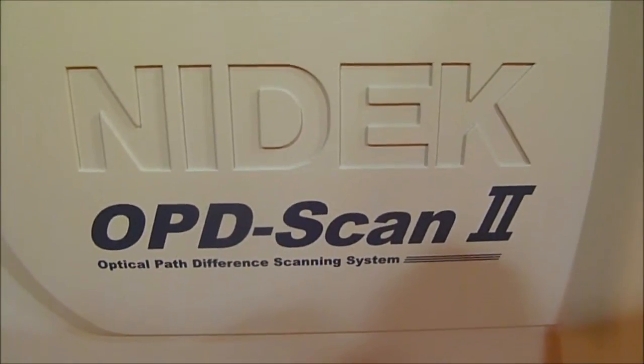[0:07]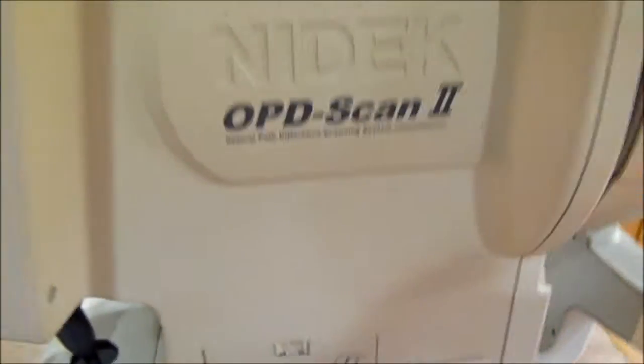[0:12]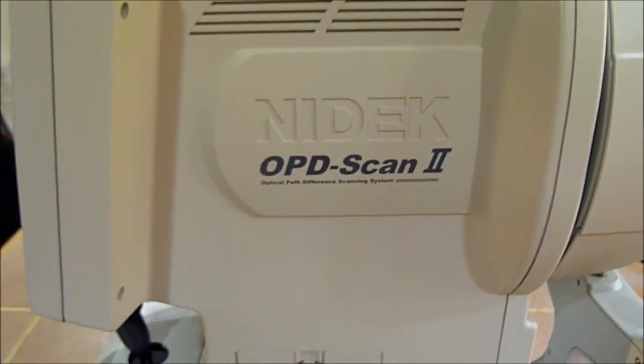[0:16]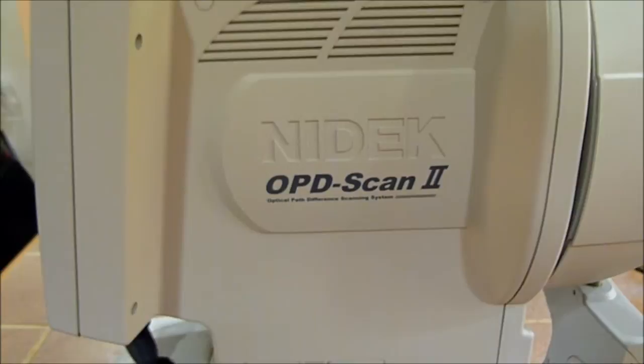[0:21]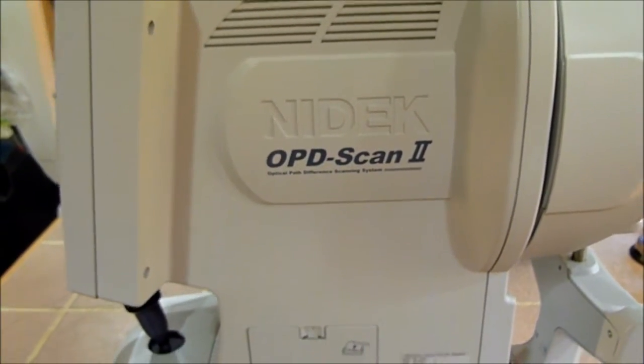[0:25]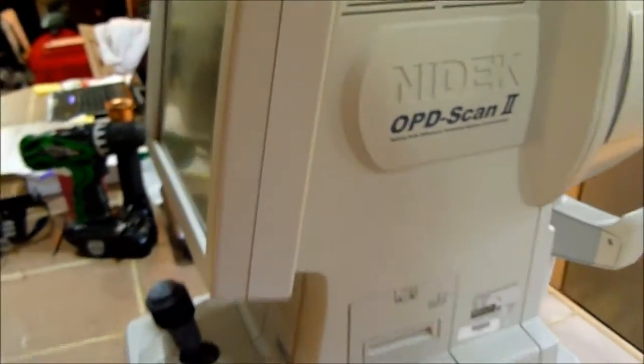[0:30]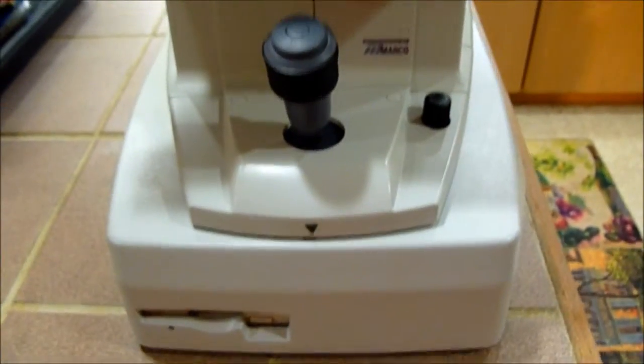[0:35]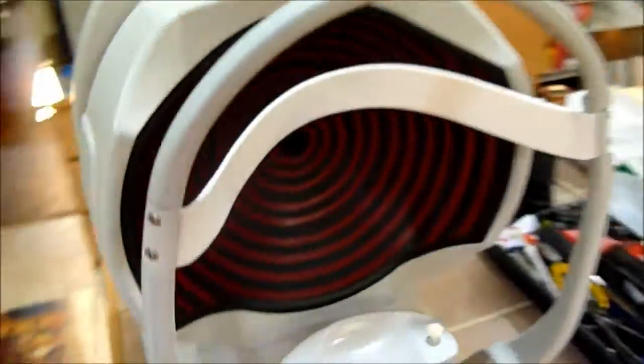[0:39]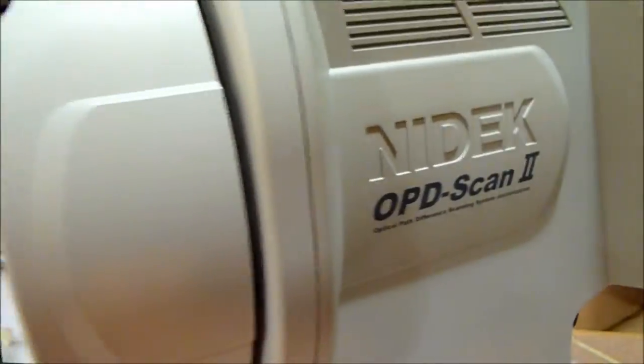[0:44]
10,000. It's making some really funny noises when it does the auto refraction, and sometimes the auto fire mechanism and auto tracking is not functioning. It's hit and miss, and I'm getting two different error codes, and then calibration wise it is not calibrating properly. It seems to be a bit over. So we're going to take this apart and see what's going on inside.
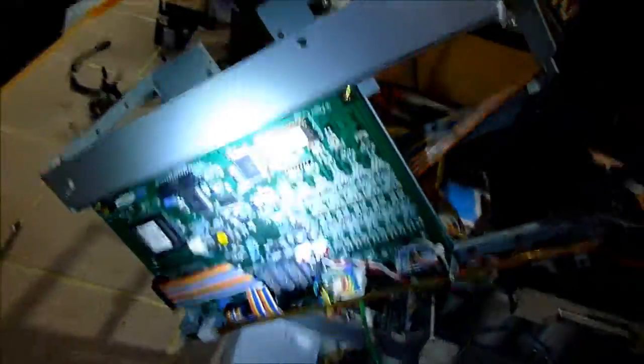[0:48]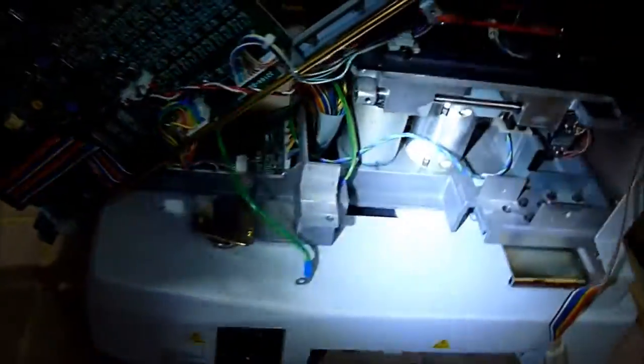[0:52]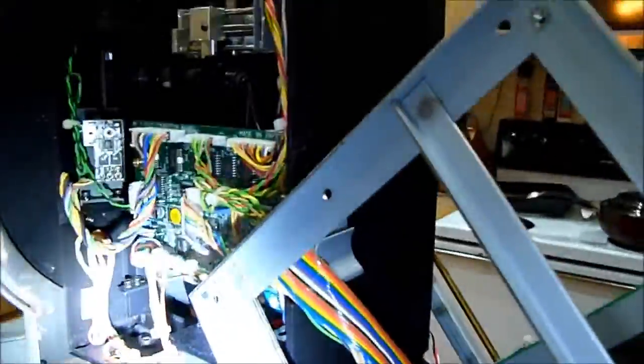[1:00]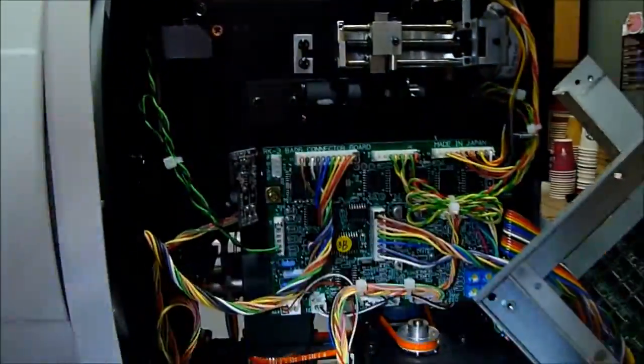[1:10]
What we did is we took off all the paneling. We took off this big cage here. We took off the sides and that bottom. And then on this side we did the same thing. Took off this cage. If you see it better from over here. There we go. Took off that panel there.
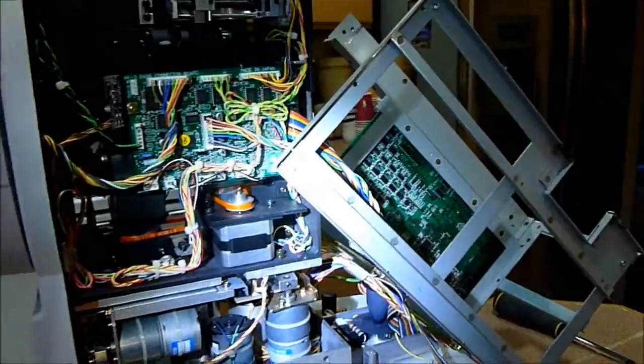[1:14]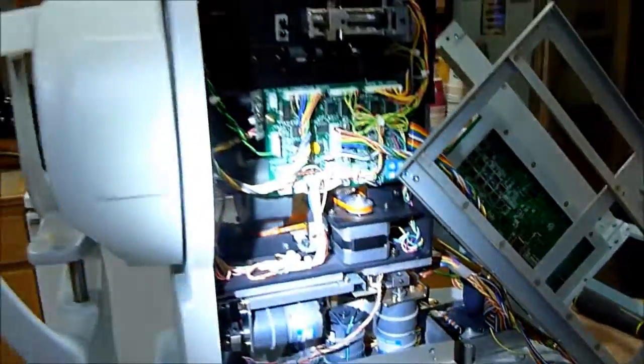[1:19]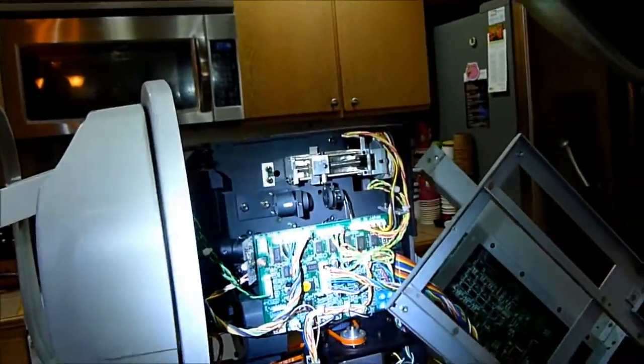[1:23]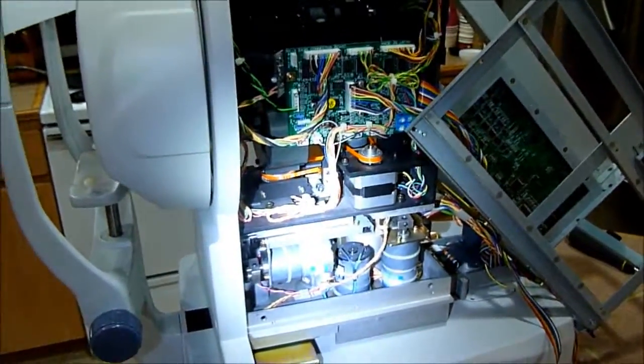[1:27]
It's a lot of work to get the frame off, but once you do, you can access everything. You just have to remember how to put it back together. This is one of the more complicated pieces, so unless you feel comfortable tackling it, I recommend you don't. So you can see this lens in here is really dusty, and all the mirrors are very dusty, and then I'll film again after they're clean just to show you what they're supposed to look like.
See that one there's got a big piece of dust on it. Everywhere. You see where I wiped it there, you can see where it's clean. I just kind of wiped it real quick with my finger. It's not a mirror or anything, it's just the back of a plate. But you can get an idea how much dust is actually in here.
Oh God, you are my God. And earnestly I seek you. Oh, how I long for you. In this dry and weary land.
There's clean. Everything clean back here. The mirror right there, behind the wires there. And we got that little sensor lens right back there.
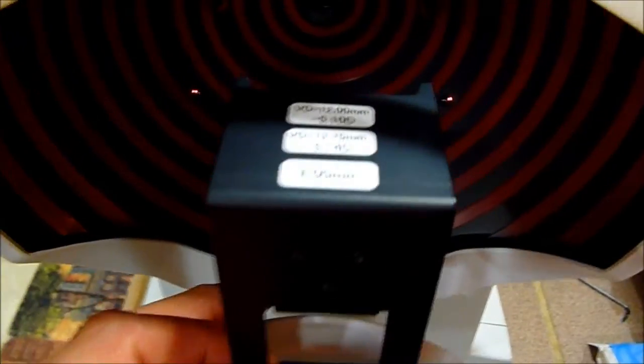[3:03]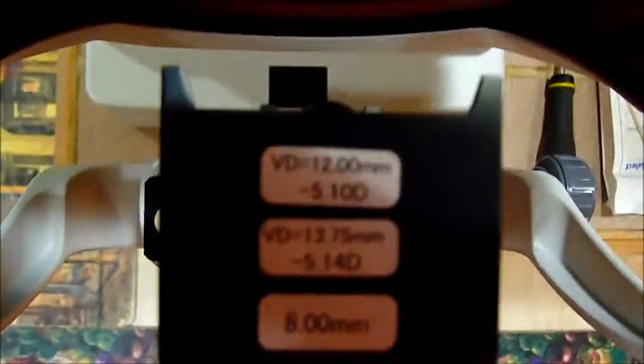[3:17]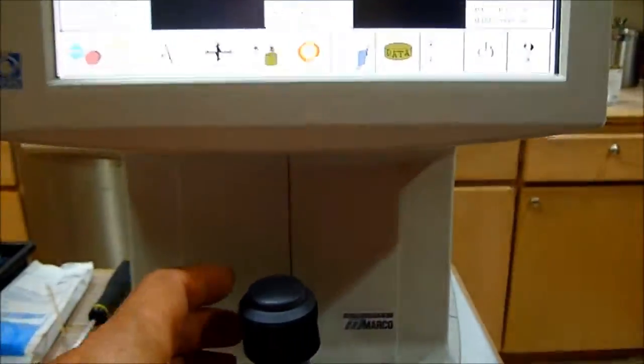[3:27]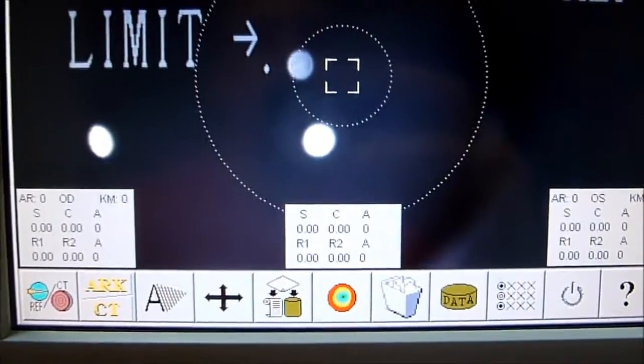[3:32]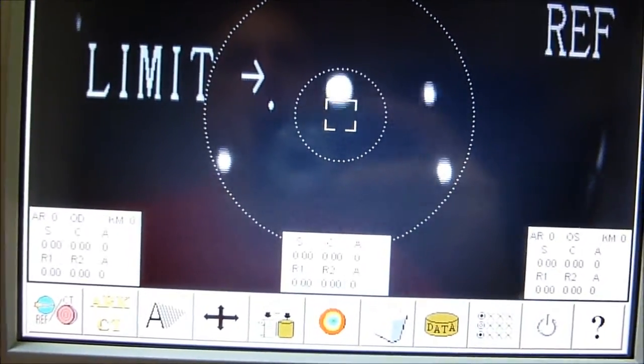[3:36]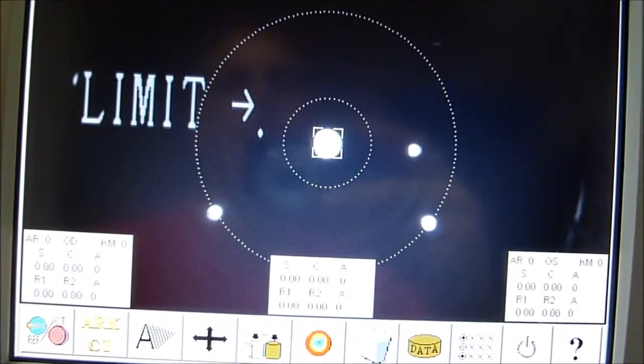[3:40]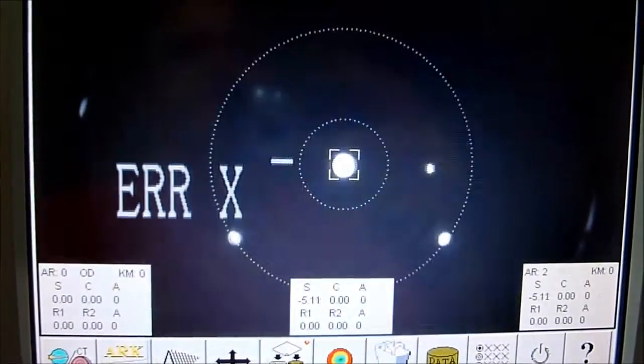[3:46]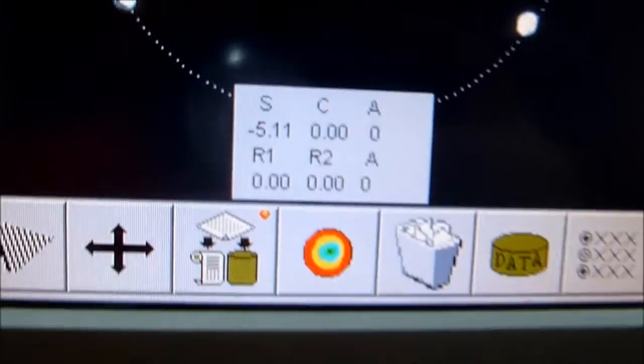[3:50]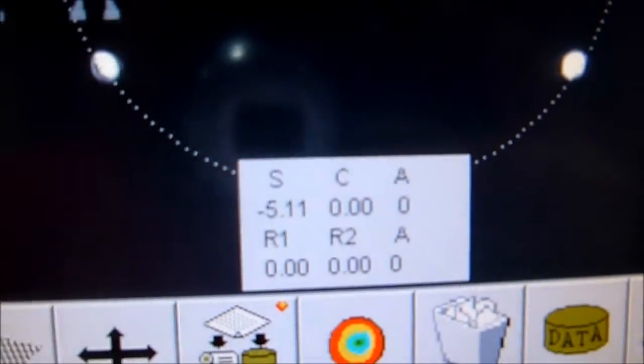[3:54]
We cleaned. Okay, we have the calibrating tool in place, and we're dealing with a vertex distance of 13.75, which gives us a negative 5.14 diopters of power that we should be calibrating to. I don't know if you can see that. So we'll go over here to the screen. And I'll go ahead and focus in on that calibrating tool. And our measurements, we're getting 511, or there I was getting 514, 515.
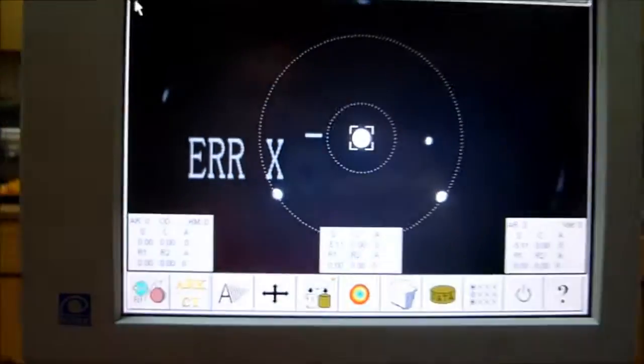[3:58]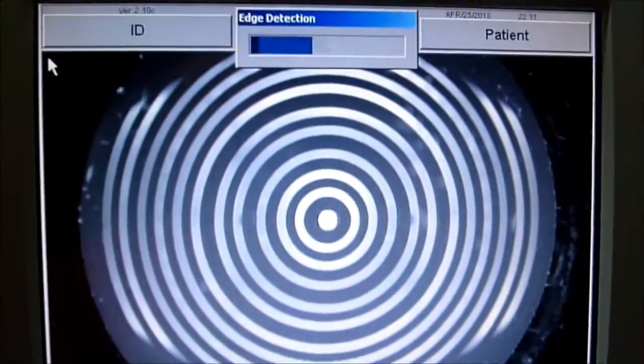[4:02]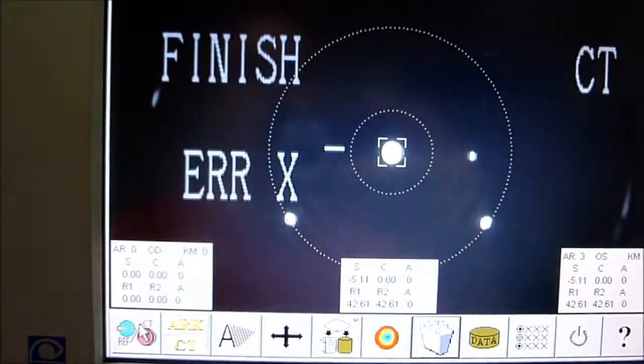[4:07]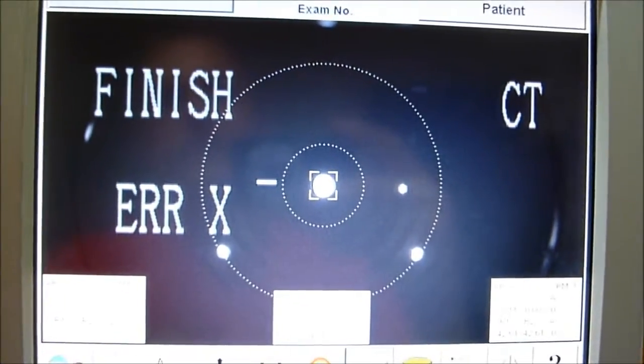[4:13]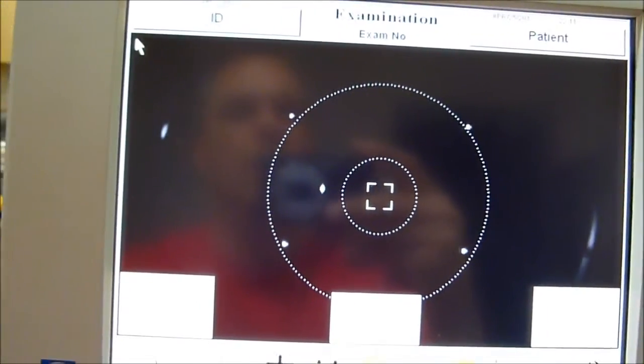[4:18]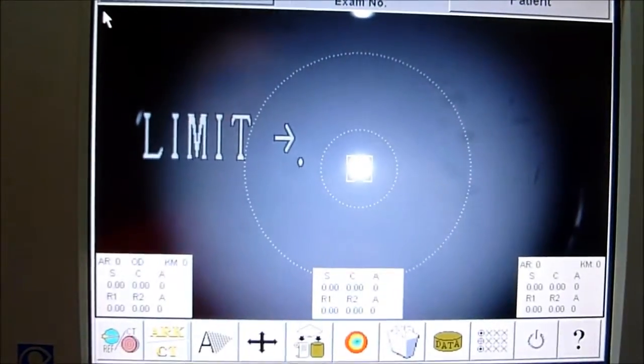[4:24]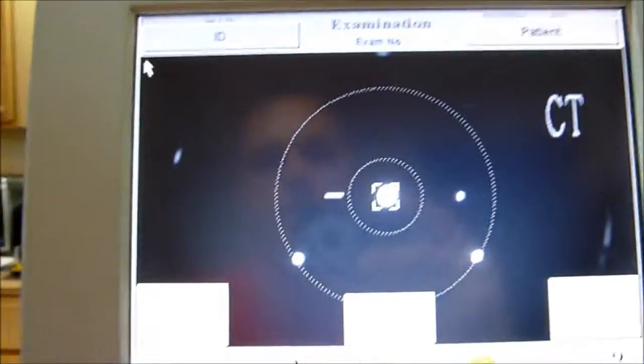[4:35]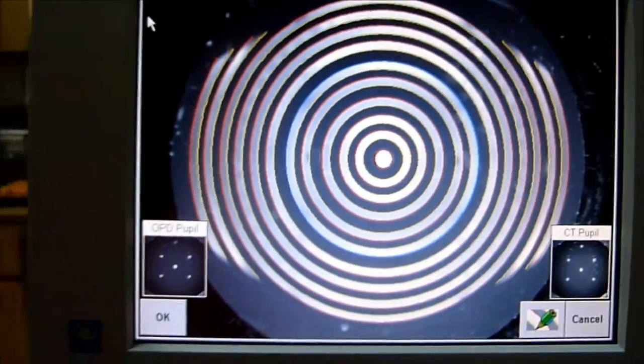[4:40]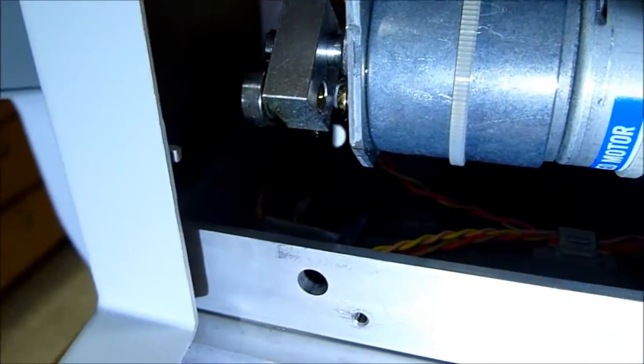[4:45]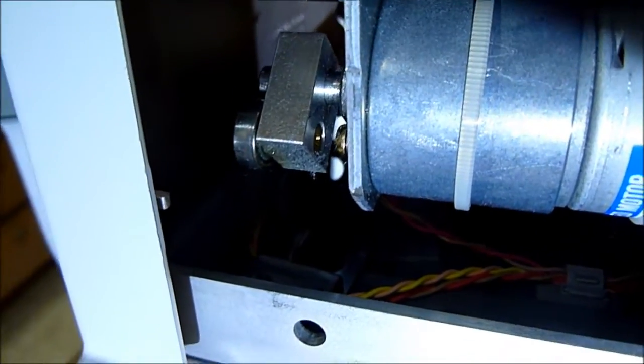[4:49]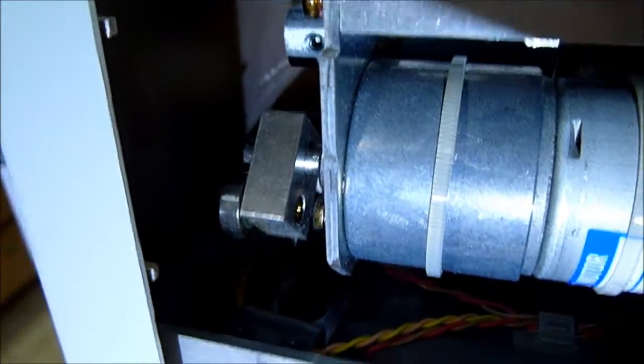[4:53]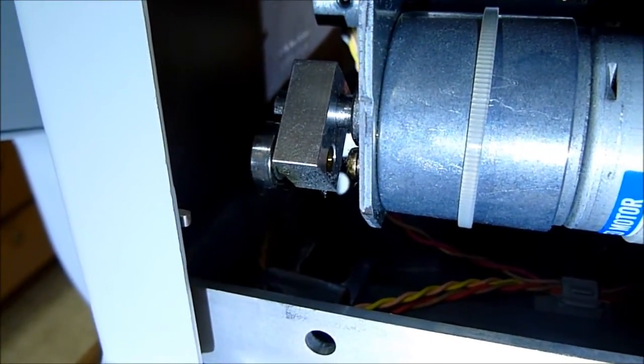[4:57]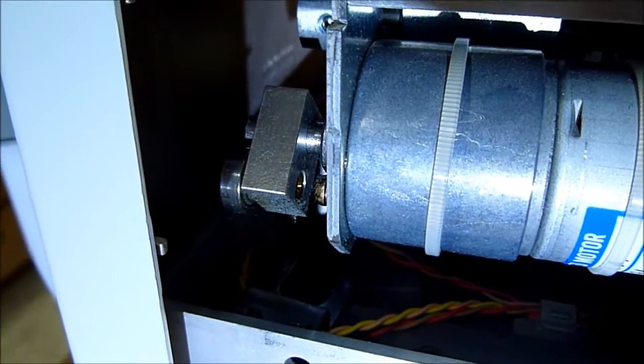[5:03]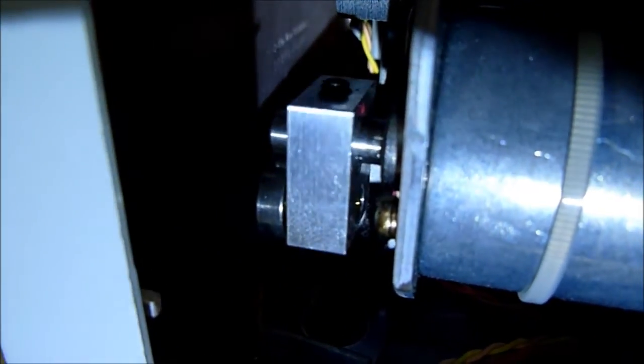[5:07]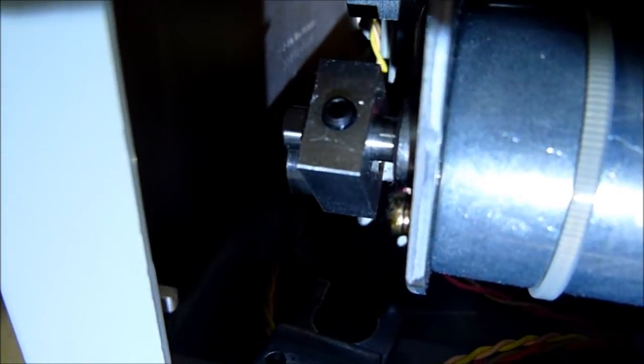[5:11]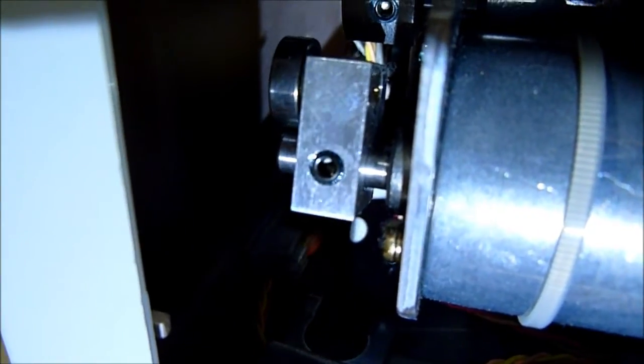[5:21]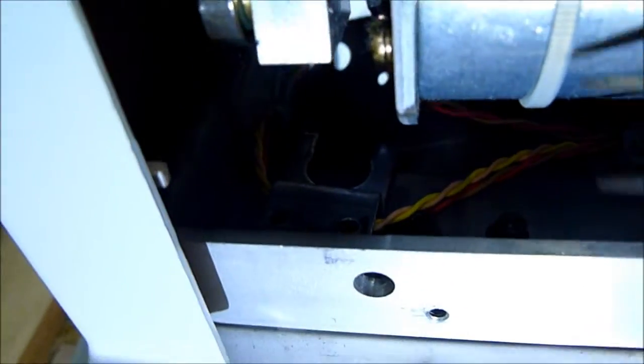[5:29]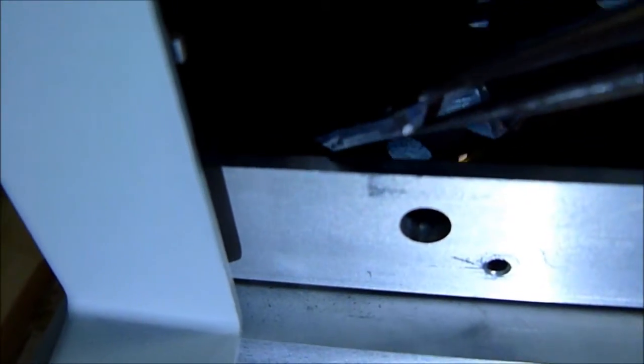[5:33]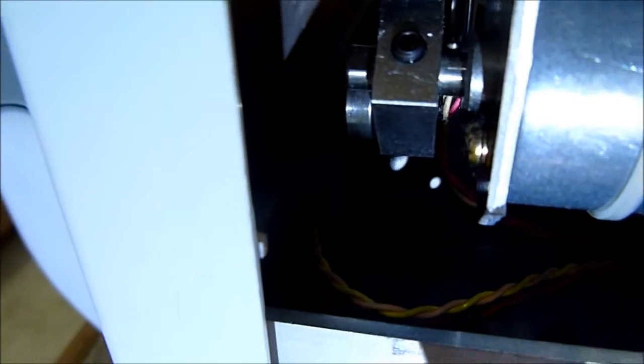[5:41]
So I figured out why we were getting some hardware errors, and what I noticed was the auto tracking was not functioning properly. And so I'm looking to see what auto tracking features aren't working. If you see this turning right here, this auto tracking motor is trying to find home, and it's not moving the head around because the bracket's missing. And if you look real close here, the bracket is right down here. And this bracket fits over that bearing so it can move the head back and forth.
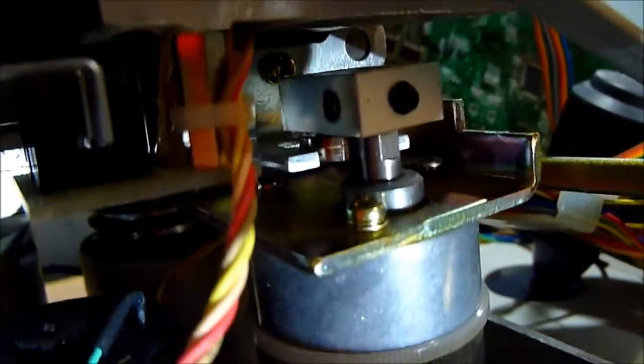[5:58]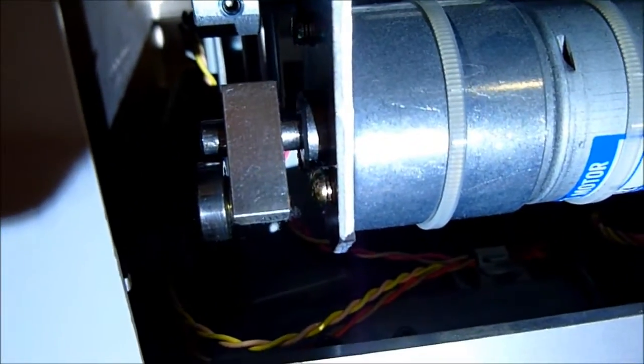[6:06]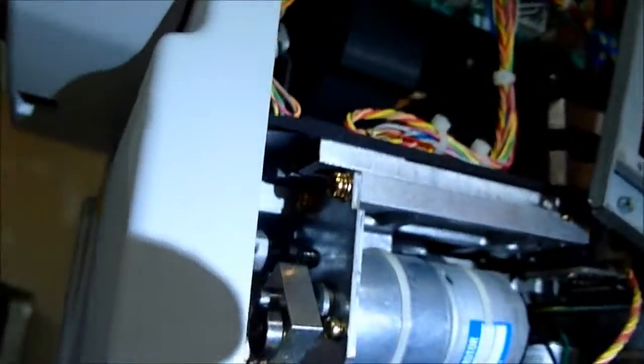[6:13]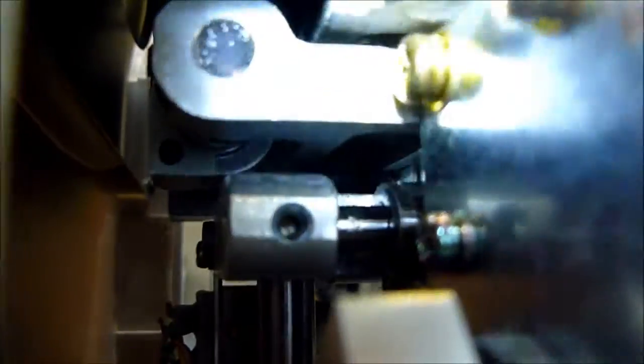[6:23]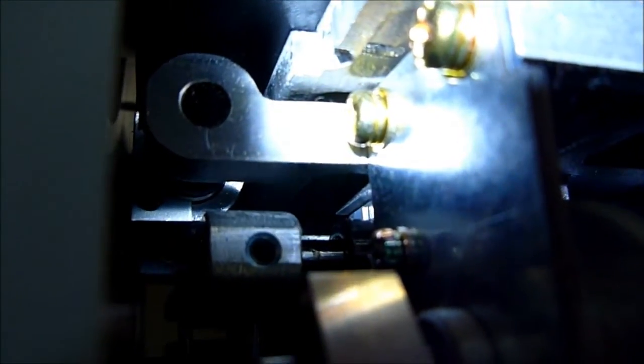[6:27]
Just like this bracket right here. If you can see, there's a bracket just like the one I showed you for this motor for moving it front and back, and this motor moves it side to side. So if you look real close up inside here, you're going to see two holes where that bracket mounts, and that far hole has a crack right where the screw goes.
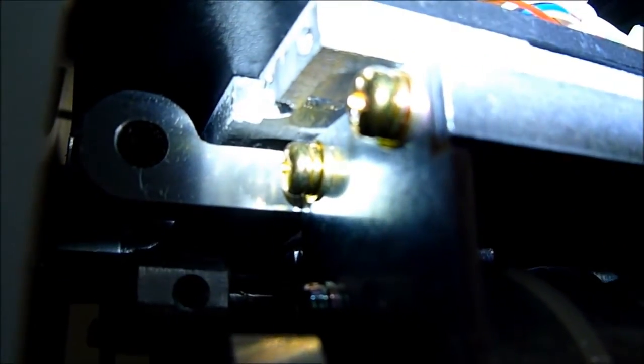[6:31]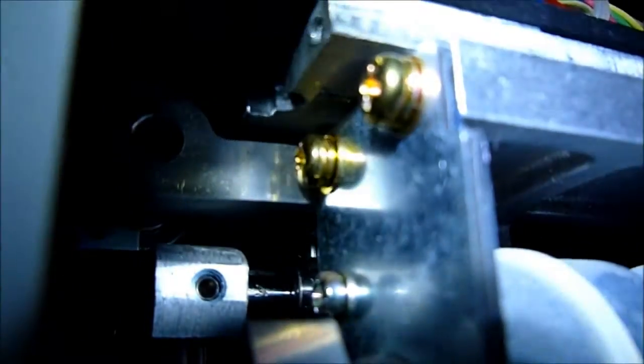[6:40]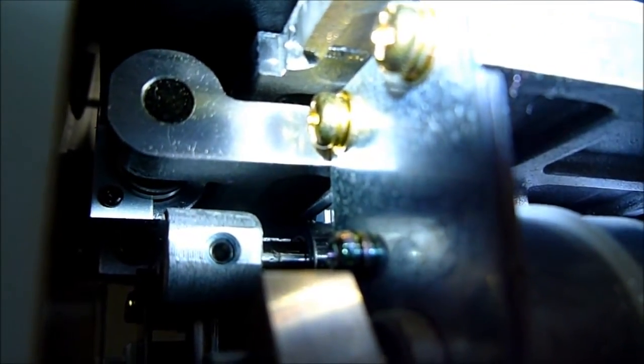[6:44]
So I don't know if a new screw is going to fit in there or not. It might have to be epoxied. But I'm curious to how that cracked and why it cracked. Someone worked on it or what, but we're going to fix it up, put it back together, and now we figure out why the auto tracking wasn't working. Okay, thanks for watching.
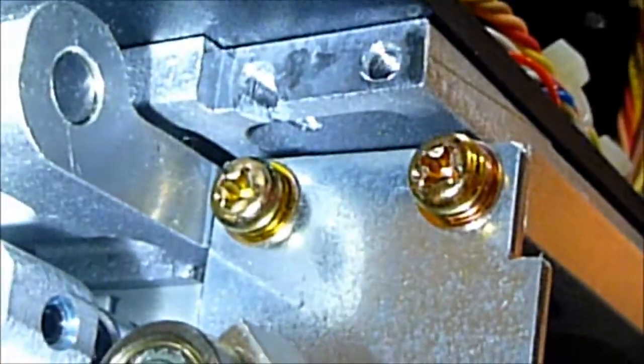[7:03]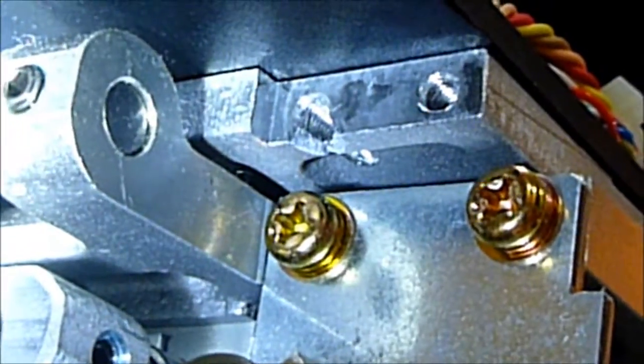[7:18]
So if you can see right up inside there, there's a little crack. And that screw is not going to hold very well. It's just going to break back out. So we're going to have to put a brace in there and some more metal and some epoxy to reinforce that screw so it doesn't come out. And just to be able to get at this, got to take the whole face of this unit off.
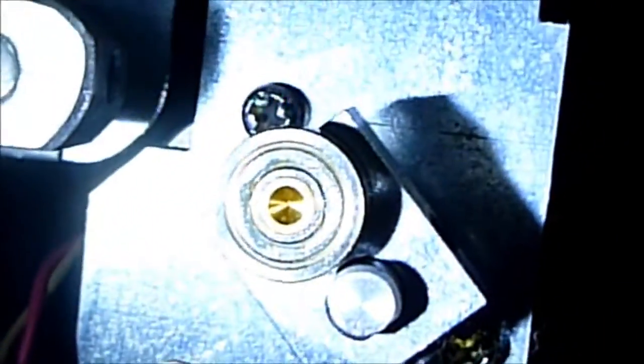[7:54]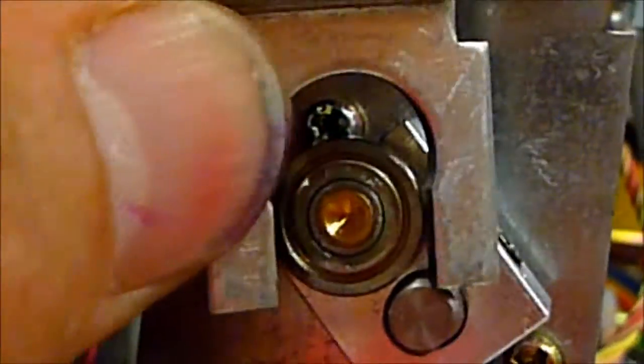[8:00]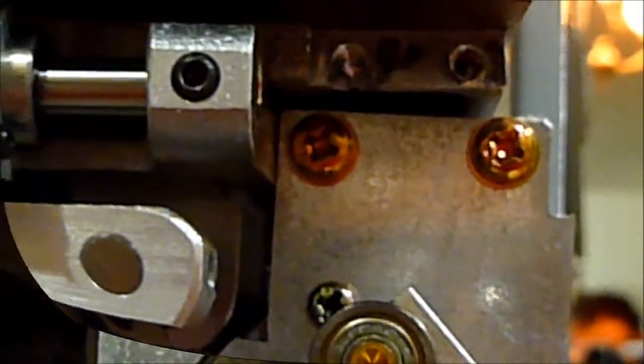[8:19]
So we just got this piece here, took that off, and then the shield piece, and took that off too. So that piece right there sits in there like this. One bolts up to those screw holes. So got a little bit of work ahead of us still.
So we've got the bracket mounted back up there, and that's how it fits in the bearing. And that allows the head to move back and forth as this cam rotates. So we're back in business. We'll put it back together and bring it back to the customer after we do some more testing.
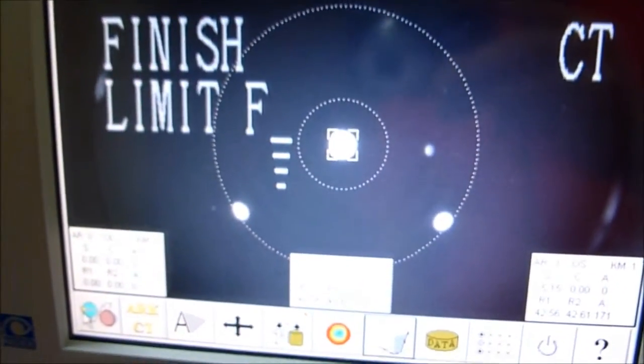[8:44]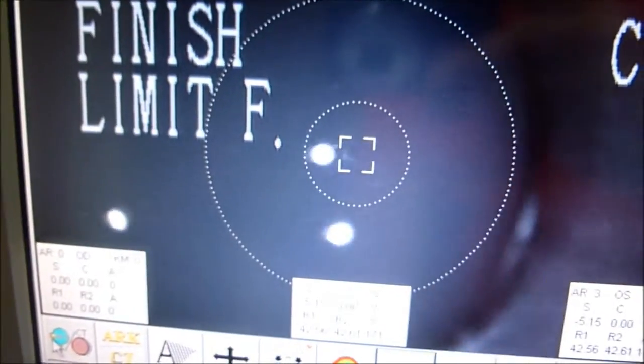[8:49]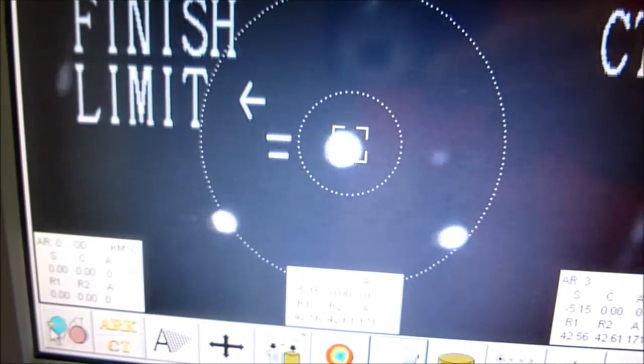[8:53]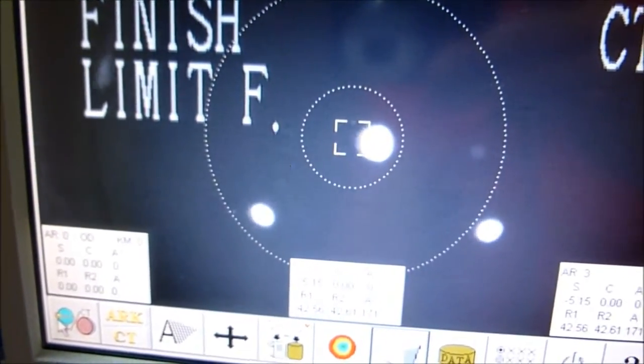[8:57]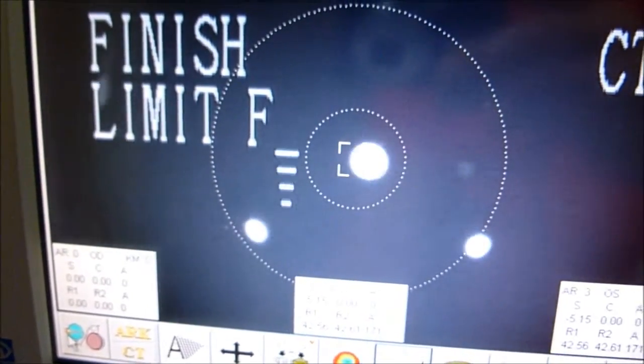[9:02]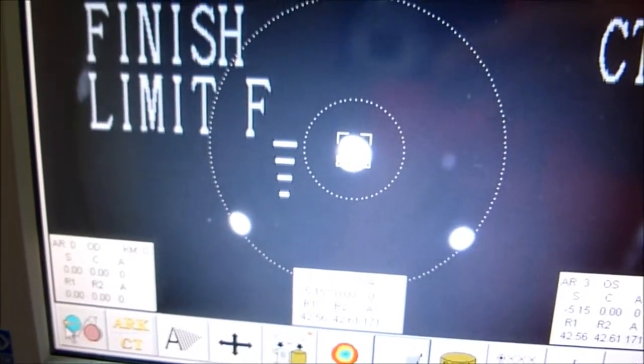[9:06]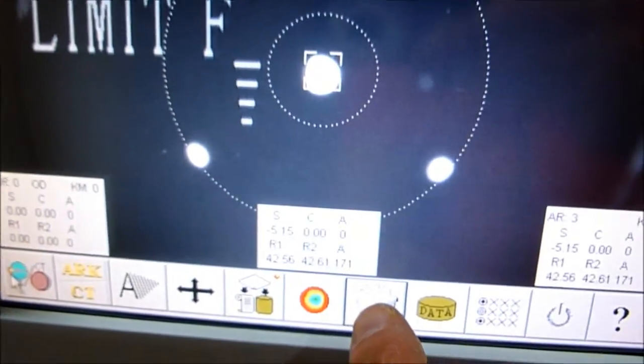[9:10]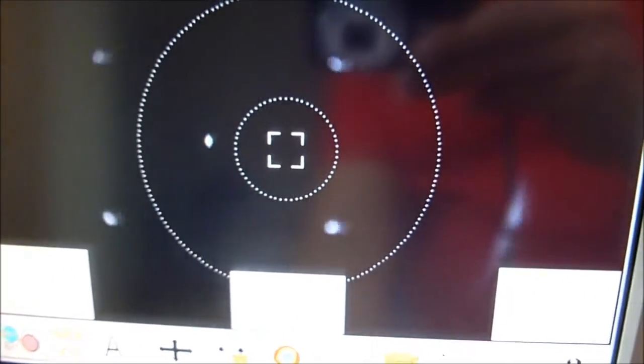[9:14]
Okay, so here we got the test, and the auto track works really good. You move it and it moves back over. Just keeps following it until it limits out, of course. But you can go back and forth and it just keeps following it, which is perfect. So let's go ahead and dump this reading, and we'll do a new one here.
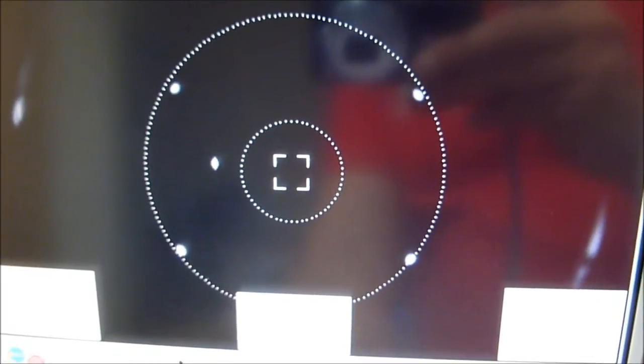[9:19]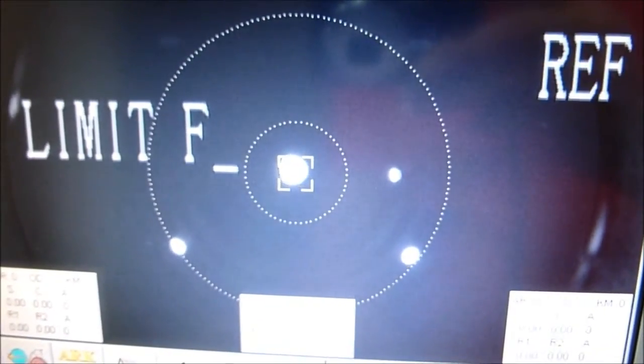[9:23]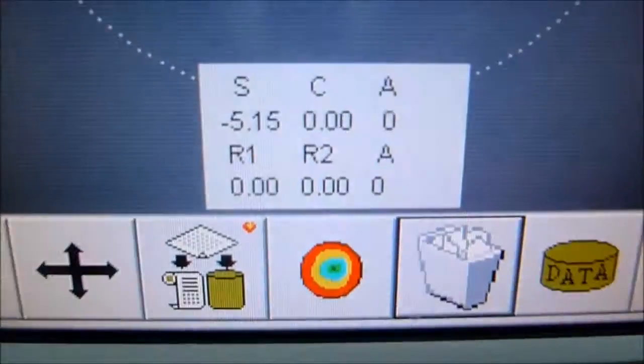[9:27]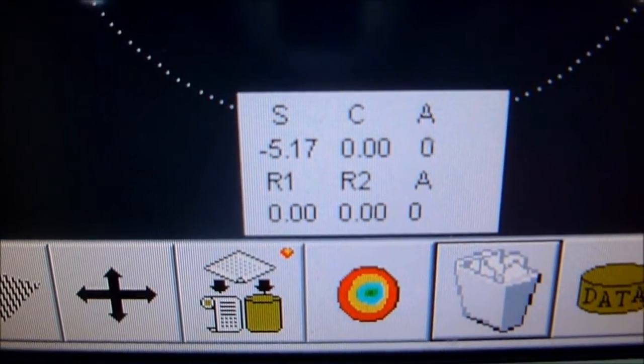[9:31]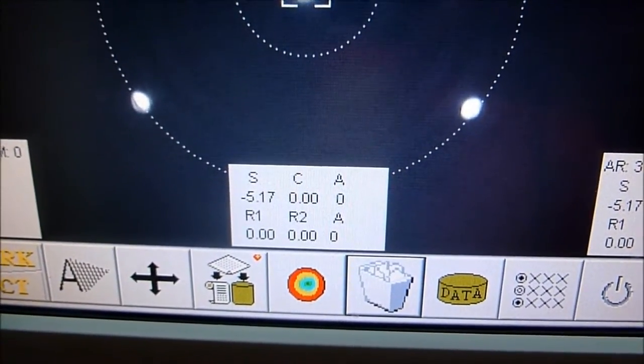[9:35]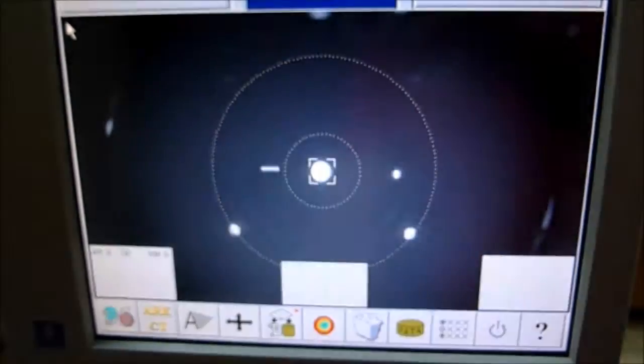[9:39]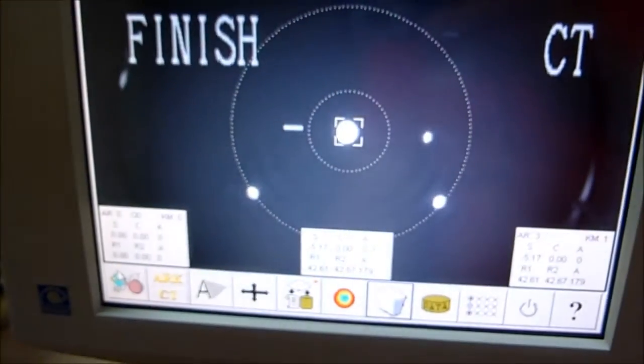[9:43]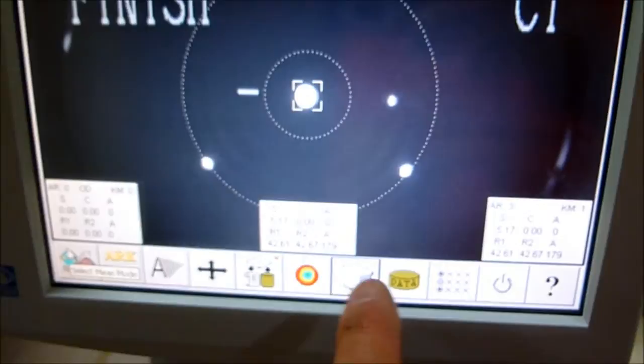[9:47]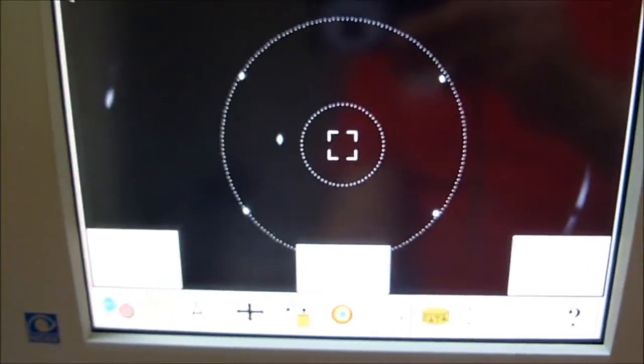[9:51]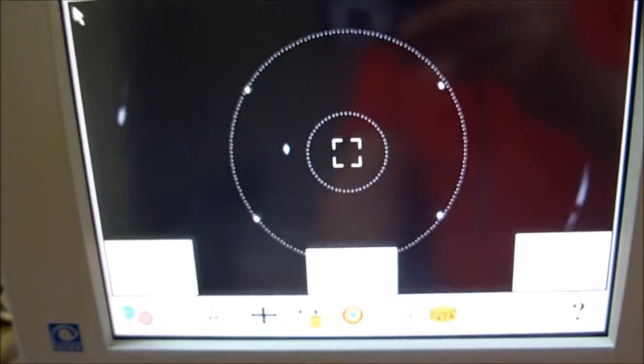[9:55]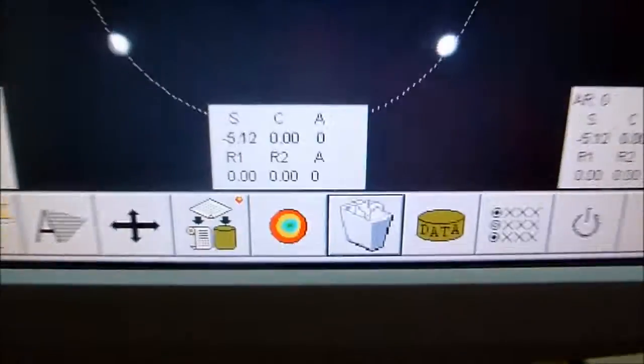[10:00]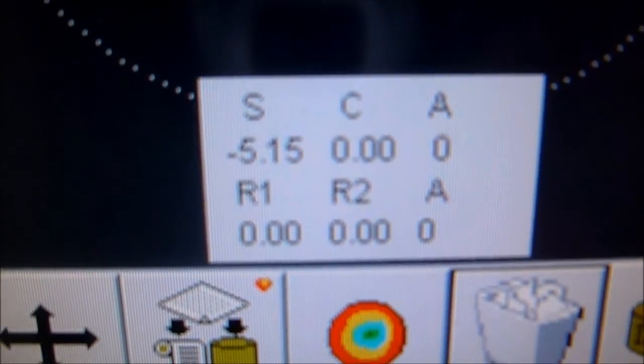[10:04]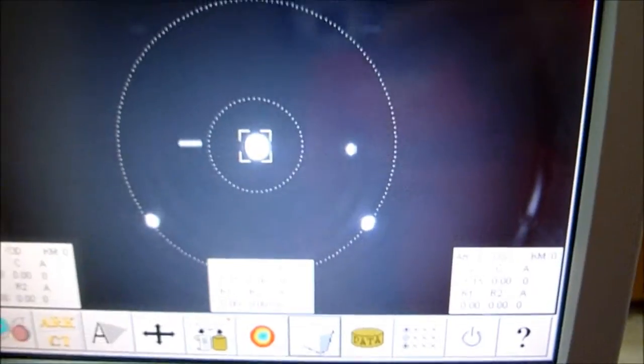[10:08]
Okay, so it came out at 517. Let's dump that one. Let's do it again. Let it set itself back up here. Should just automatically fire. There it goes. 512, 514, 515. So we're right in there. I mean, that's just perfect calibration.
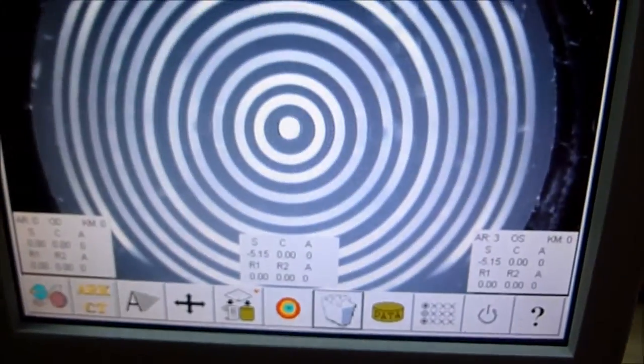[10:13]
Do the topo. Lines are good.
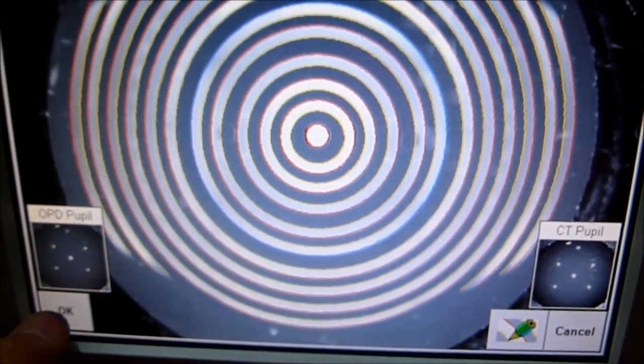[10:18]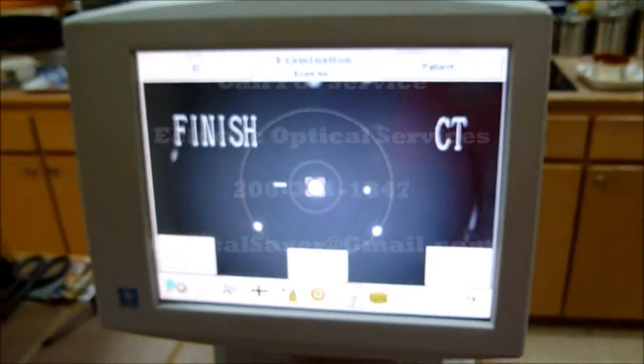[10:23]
There you go. In the shadow All done. of your wings. Yep.